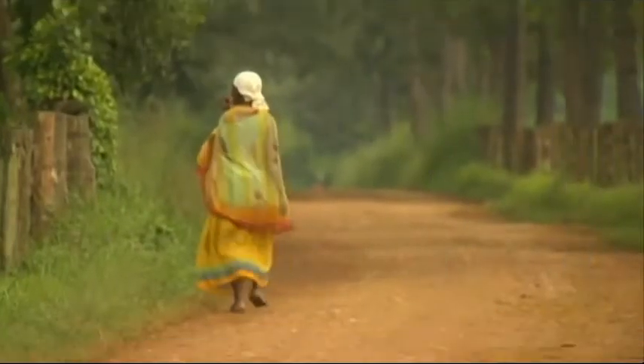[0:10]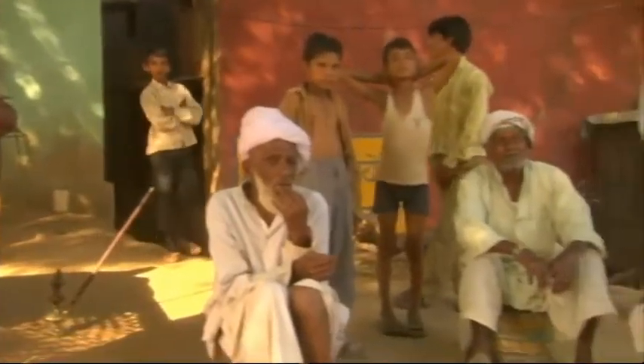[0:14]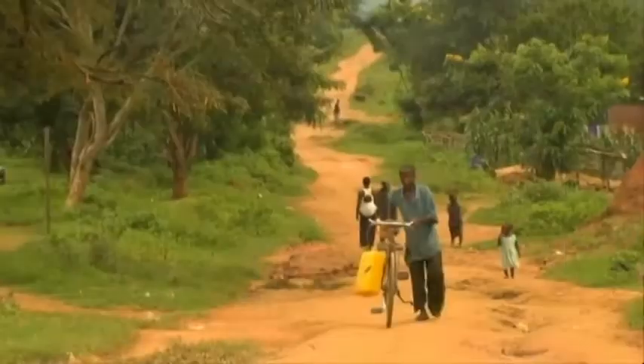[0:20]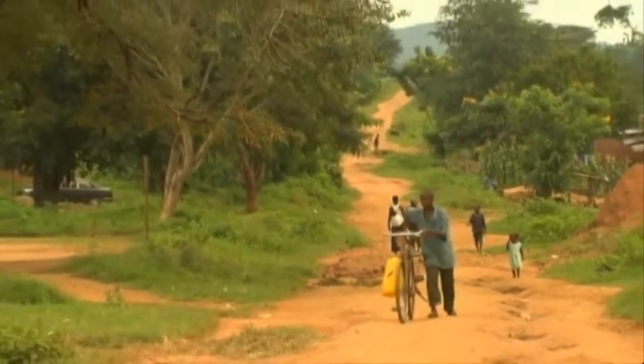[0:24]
Point-of-care diagnostics have become an important part in the screening and treatment of infectious diseases. Every year, over 10 million people die from infectious diseases worldwide. 95% of these deaths occur in developing countries where resources are limited. Therefore, there is a great need for a low resource-consuming and quick diagnostic device.
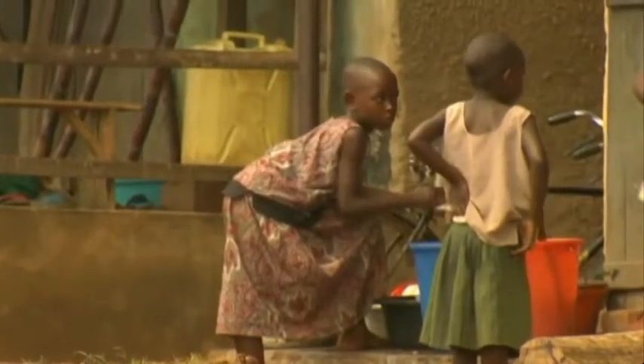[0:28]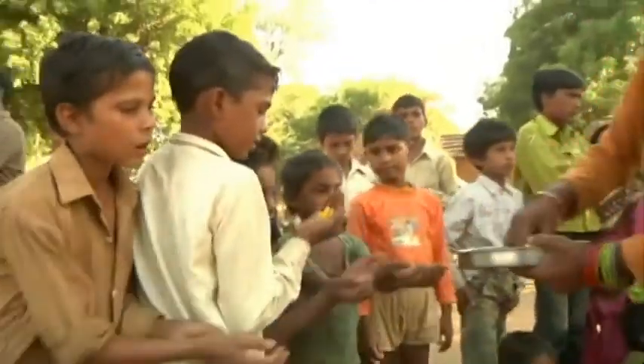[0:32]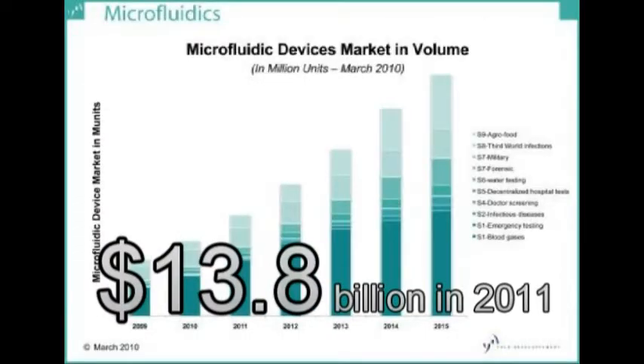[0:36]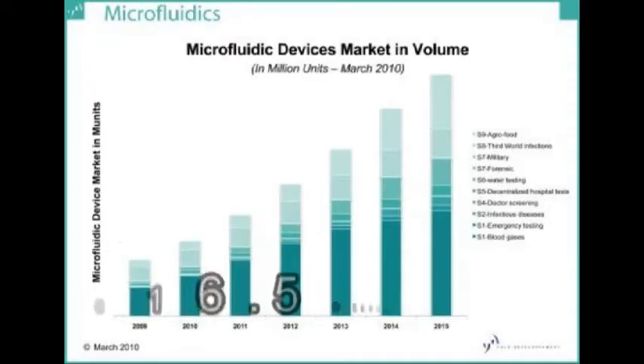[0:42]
Faster diagnostics would allow for earlier treatment and thus save lives. In addition, faster diagnostics would lower the overall healthcare cost by reducing the number of hospital visits necessary. Overall market value of point-of-care diagnostic devices was $13.8 billion in 2011 and is expected to increase to $16.5 billion in 2016. Detection of infectious diseases can be accomplished through PCR-based diagnostic devices. Such devices extract DNA from a sample and amplify it so that it can be detected.
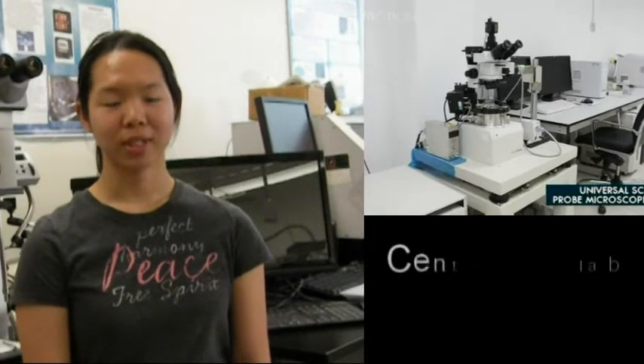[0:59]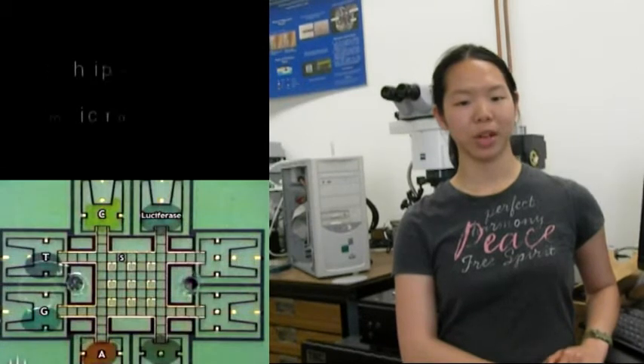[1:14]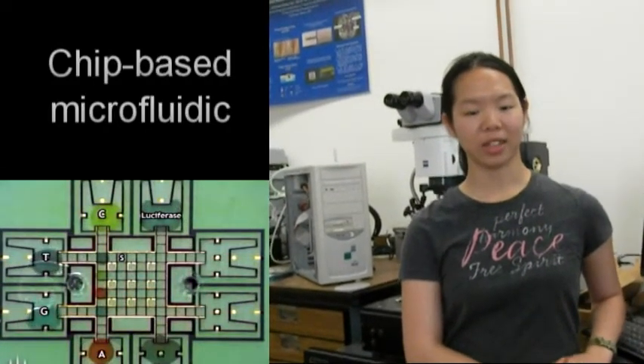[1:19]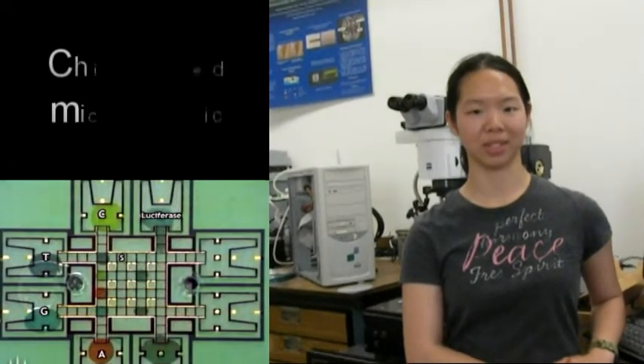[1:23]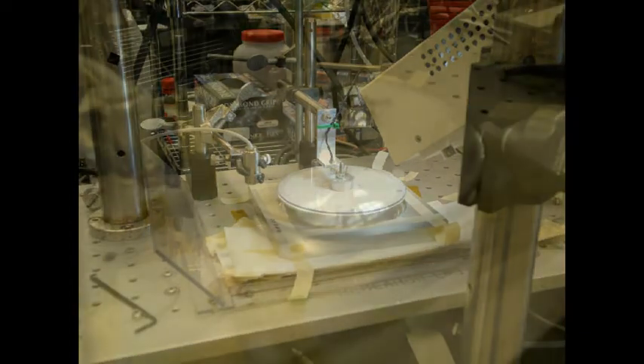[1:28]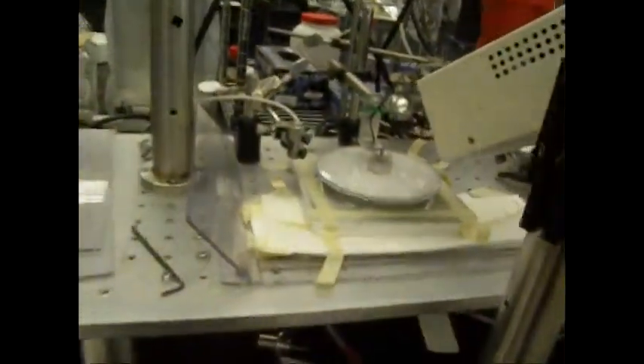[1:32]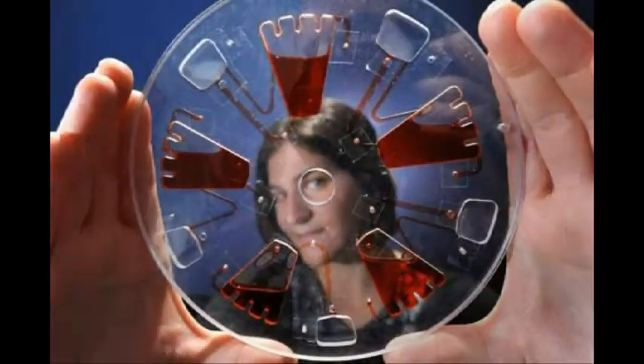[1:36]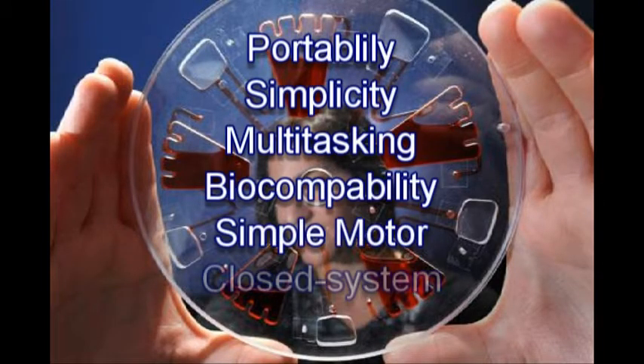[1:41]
There has been great progress in the field of CD microfluidics. CD microfluidics is composed of a disc, which a centrifugal force drives fluid outward from the center. Traits of CD microfluidics include portability, simplicity, multitasking, compatibility with a variety of biological samples, and the fact that it's run by a simple motor. Lastly, CD microfluidics is a closed system, meaning that all the processes occur in a disc without the need of external sources. A CD microfluidic device consists of fluid chambers connected by fluidic channels.
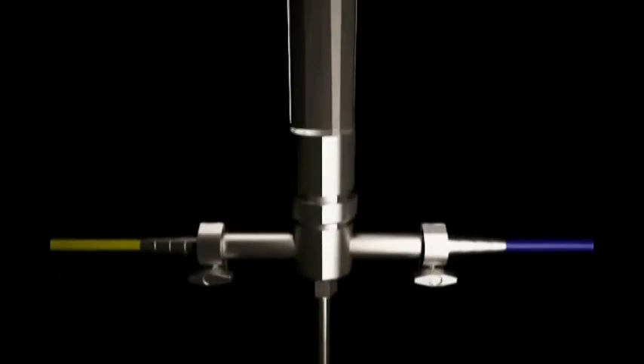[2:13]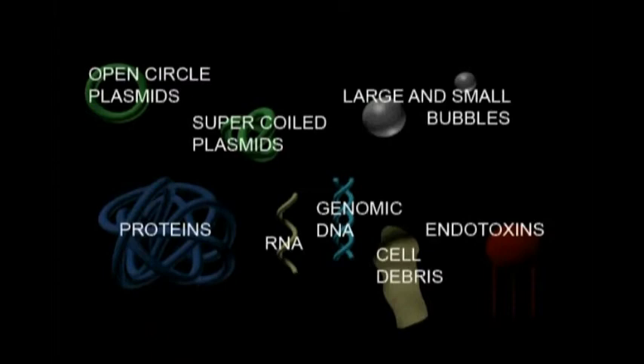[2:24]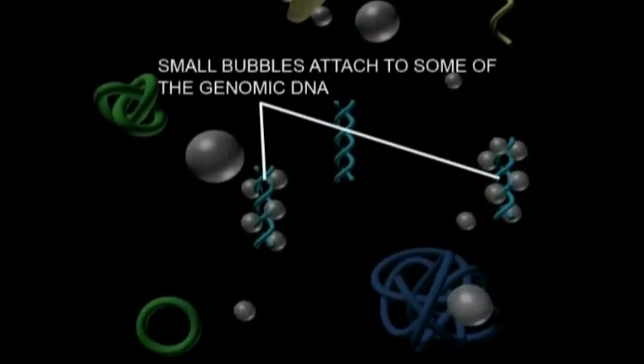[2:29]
A complete point-of-care sample-to-answer CD microfluidic device can perform several main steps, including cell lysis and separation, PCR, hybridization, and detection. Each step is performed in a separate chamber. The first step is cell lysis. Cell lysis involves breaking apart a cell wall to extract the genomic or proteomic material from the cell. Cell lysis can be performed using biological or chemical agents such as chemical buffers, or can be performed by applying mechanical force such as shear stress to a cell wall. This is achieved by using glass beads or magnetic beads.
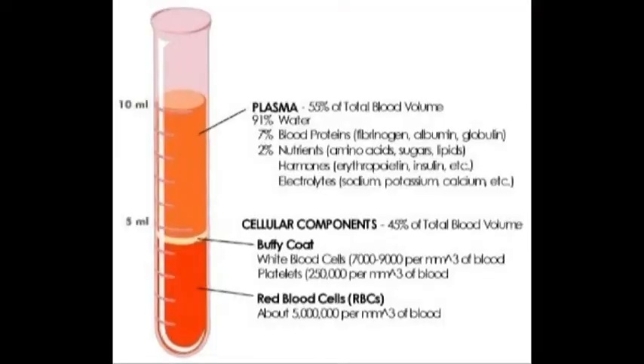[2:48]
The next step involves the separation of DNA from the other components of the cell. DNA is separated from the other components of the cell by spinning the CD. Since DNA is lighter than the other components of the cell, it floats to the top of the chamber, where a connecting channel guides the DNA supernatant into the PCR chamber. At this stage, a buffer solution is mixed with DNA to perform PCR. The buffer solution consists of primers, free nucleotides, and Taq polymerase.
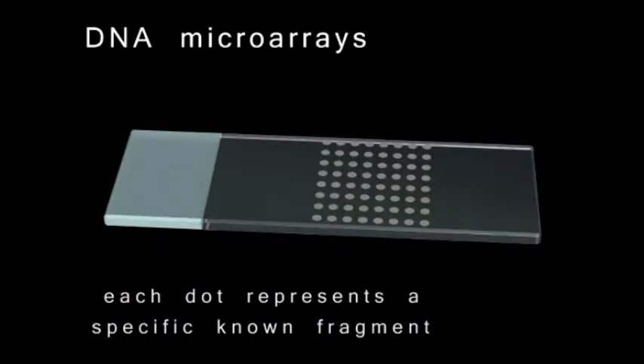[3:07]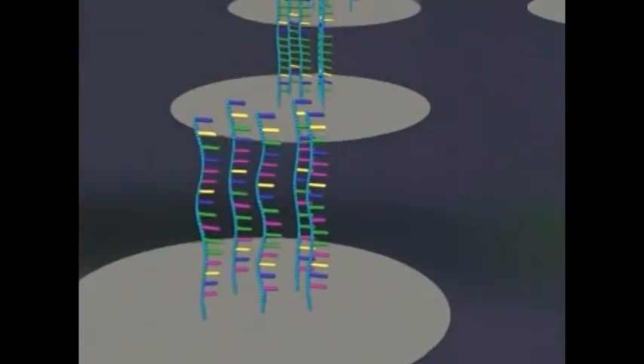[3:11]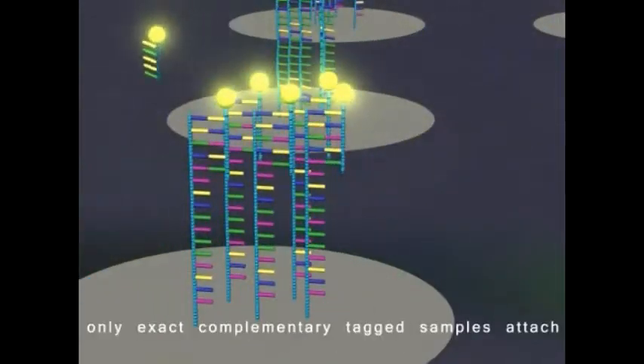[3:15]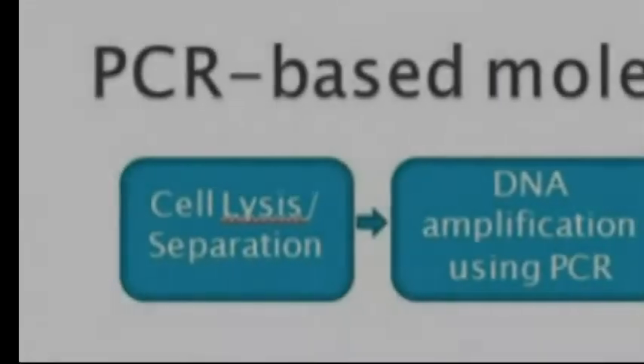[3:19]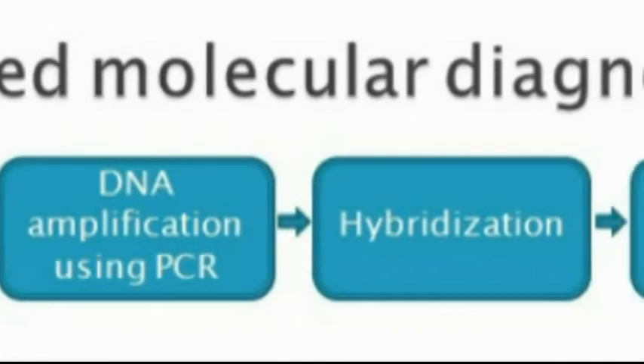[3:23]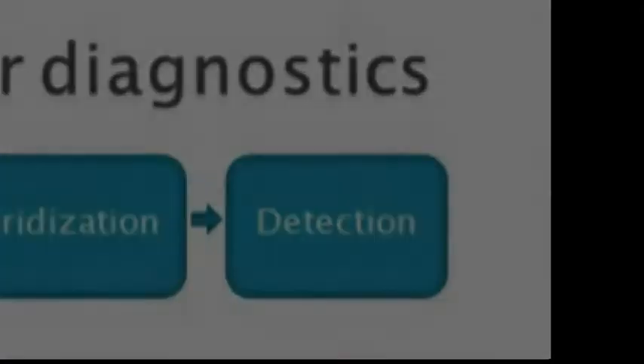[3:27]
After amplification, the DNA is sent to a hybridization chamber over a microarray where target probes attach to complementary DNA strands. The final step is where fluorescence detection can occur. A wash step is needed to remove any non-specifically adhered DNA. Additional chambers would be needed to hold reagents, buffer solutions, and waste from the PCR process.
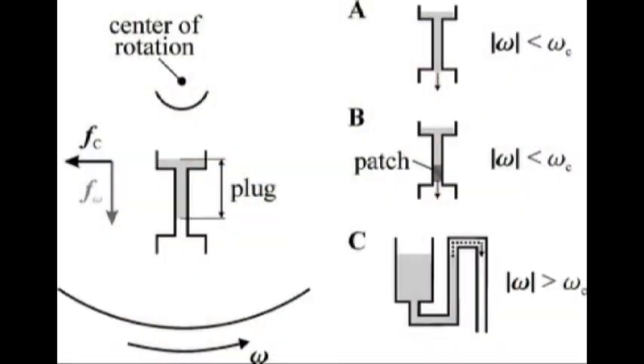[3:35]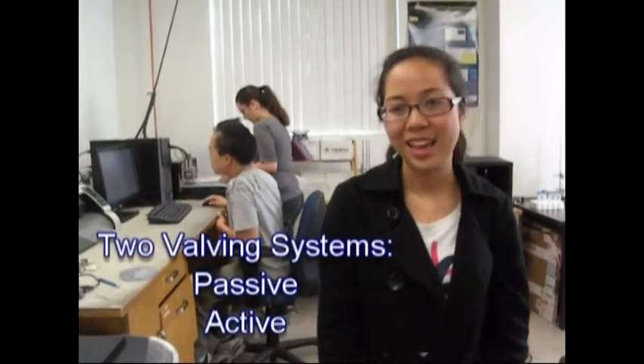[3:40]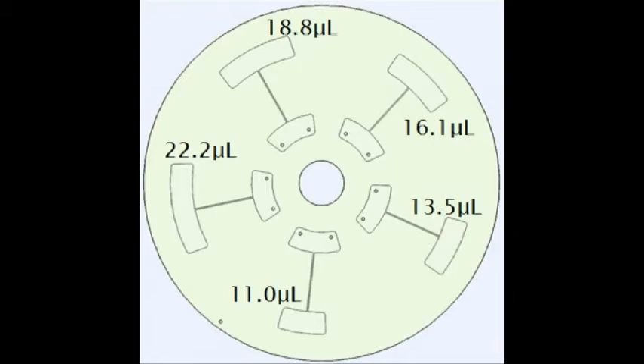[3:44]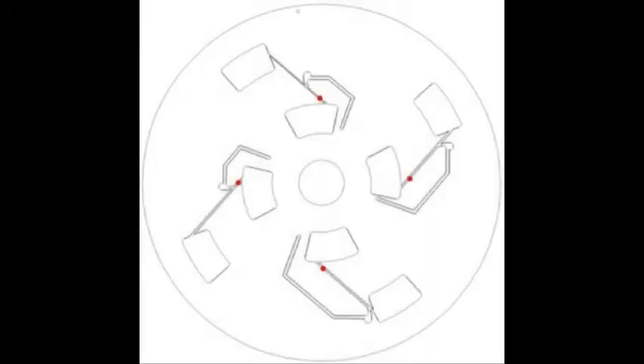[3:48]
Valving technique is the most important function utilized on the microfluidic CD platform. Valving is necessary to control fluid flowing from one chamber to another. There are two valving systems, passive and active. Passive valving does not require any external mechanism for fluid to flow from an inner to an outer chamber, while an active valving requires external mechanism to accomplish this.
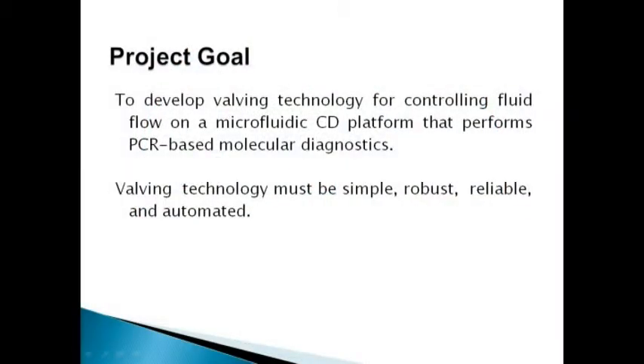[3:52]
Our goal is to develop valving technology for controlling fluid flow on a microfluidic CD platform. Ultimately, the microfluidic CD platform should be able to perform PCR-based molecular diagnostics. Valving technology must be simple, robust, reliable, and automated.
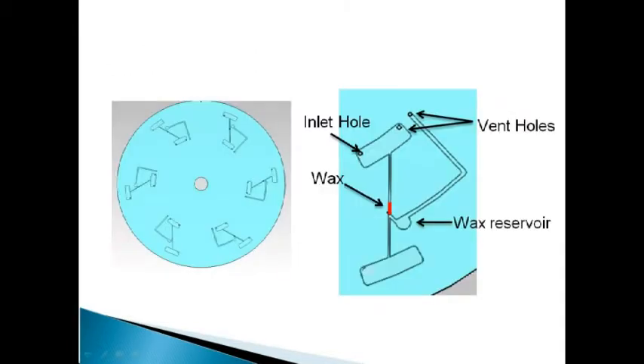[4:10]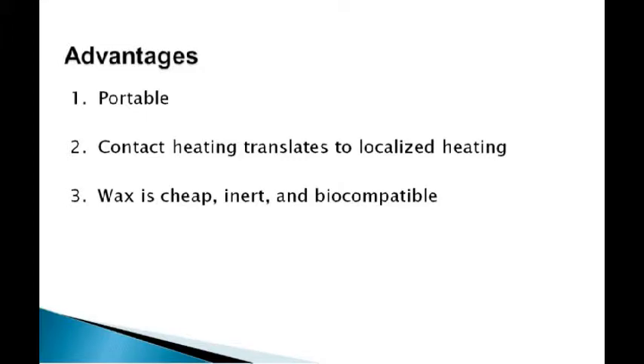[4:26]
Pictured here, we have SolidWorks drawings for our active valve wax design. Wax is colored red. Once the wax melts, it's designed to flow into the wax reservoir. The vent holes allow the fluid sample to be injected in and also to allow the wax to flow into the wax reservoir. Advantages of our design include portability, contact and localized heating, inexpensive, inert, and biocompatible wax.
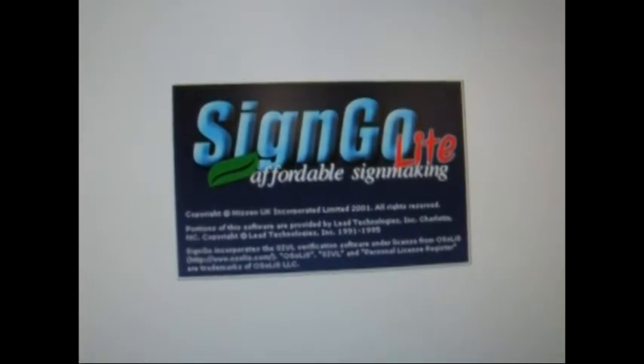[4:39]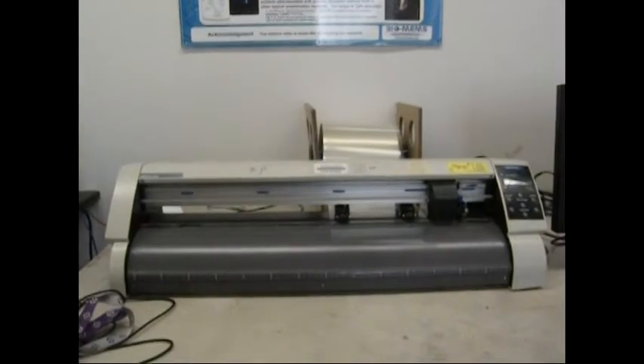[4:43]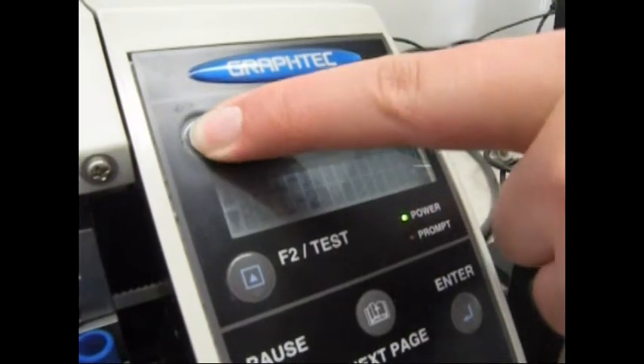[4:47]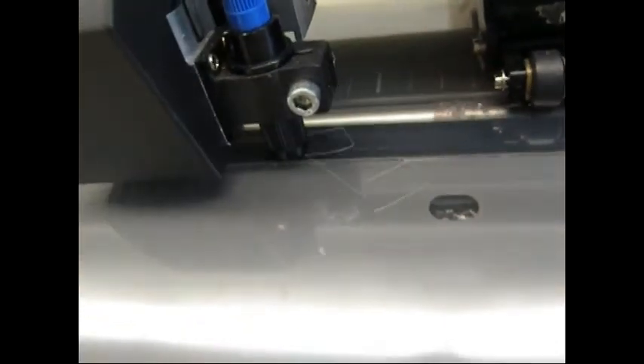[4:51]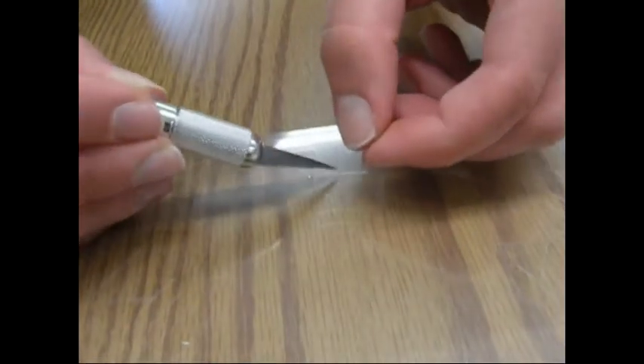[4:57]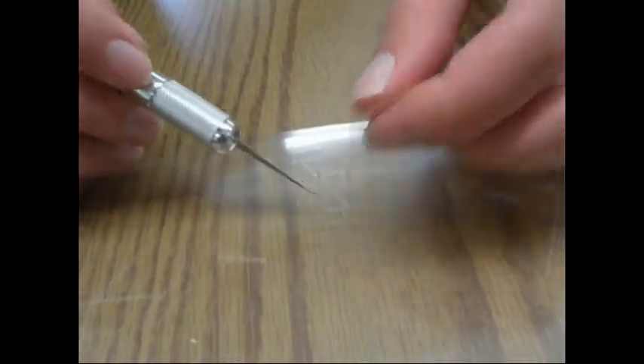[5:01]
We begin the fabrication of our CD by cutting the adhesive. To cut the adhesive, we import our CAD designs onto SignGo Lite. We turn on the cutter plotter, lift the lever, center the origin, and begin cutting our design. After our design is cut, we use an X-Acto knife to remove two layers of adhesive from the center of the CD and the chambers and channels. We make sure that we carefully cut these layers.
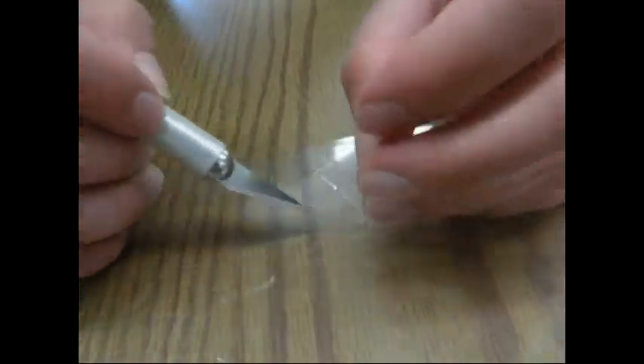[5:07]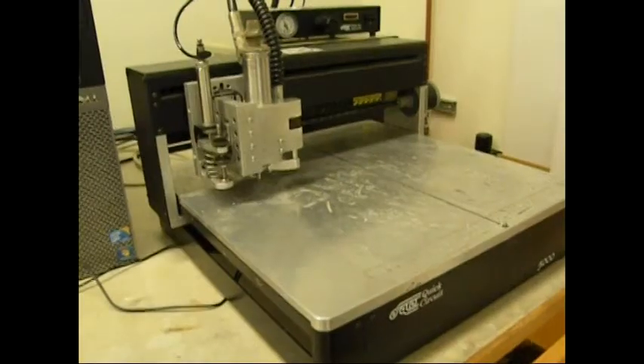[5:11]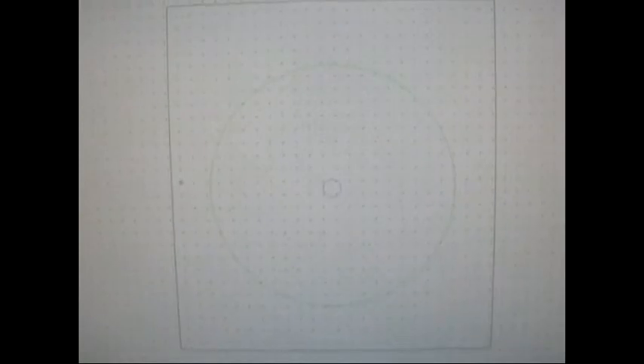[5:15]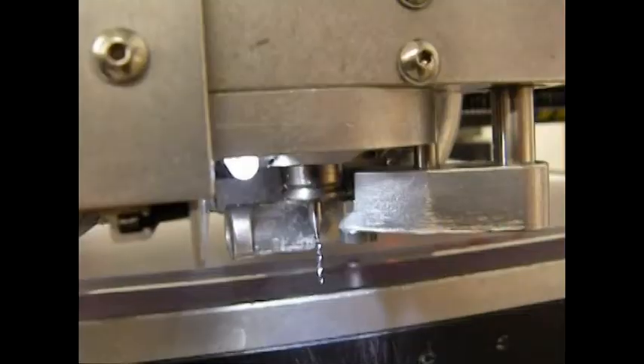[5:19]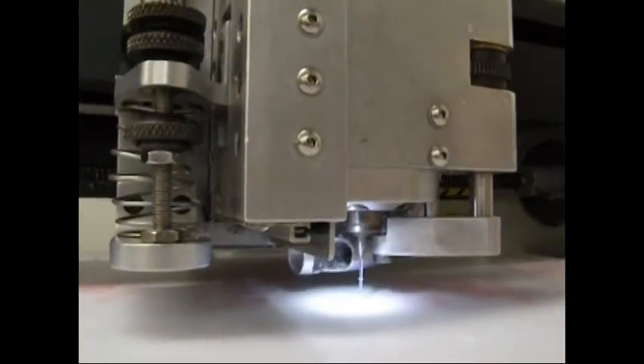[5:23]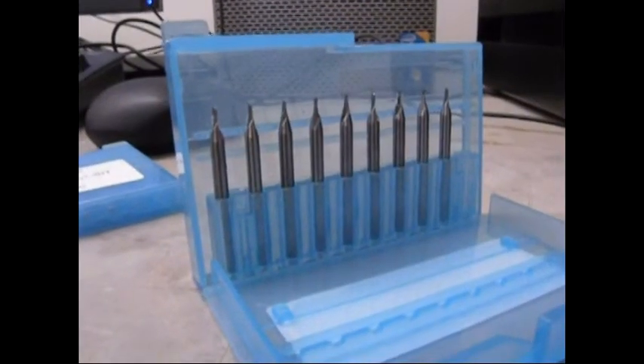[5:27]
Next, we mill our polycarbonate layer. We will use the milling machine, and we will import our design onto IsoProbe. To cut the vent holes and the alignment hole, we will use the drill bit. After the drill bit is loaded, the machine mills the holes. Next, we load end mills into the machine. The end mills cut the center of the CD and the perimeter of the CD.
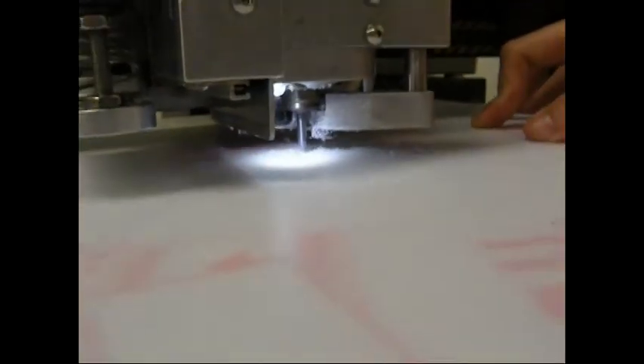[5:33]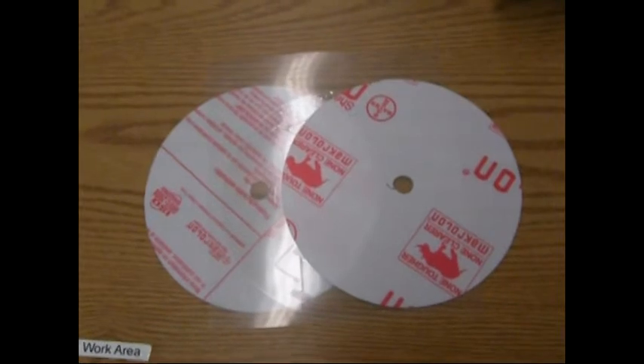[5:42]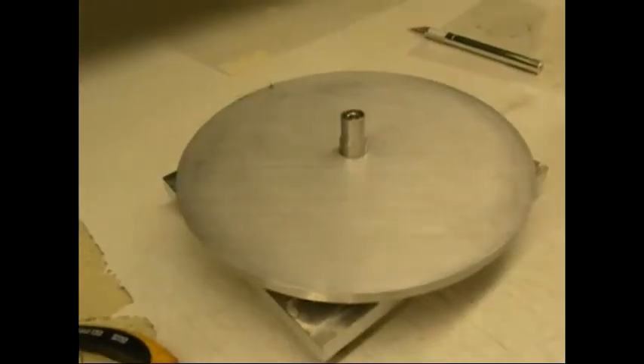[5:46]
Once we have our top and bottom polycarbonate layers, we begin deburring polycarbonate. We now have two polycarbonate layers and an adhesive layer. Our next step is to put together our CD. We will use an alignment stand to align the polycarbonate with the adhesive layer. The following is the assembly process.
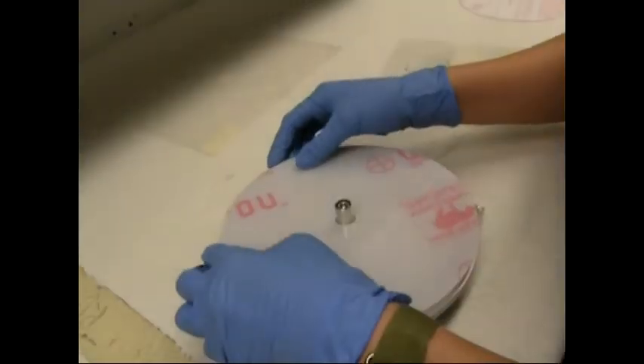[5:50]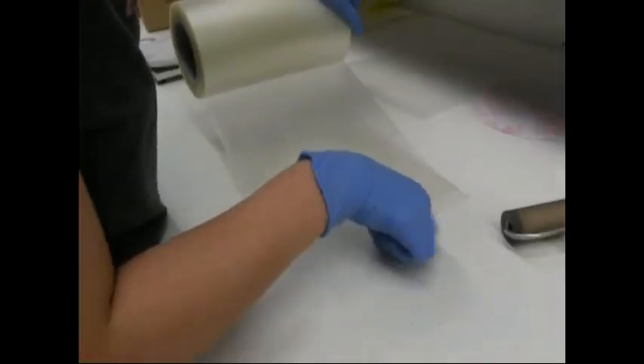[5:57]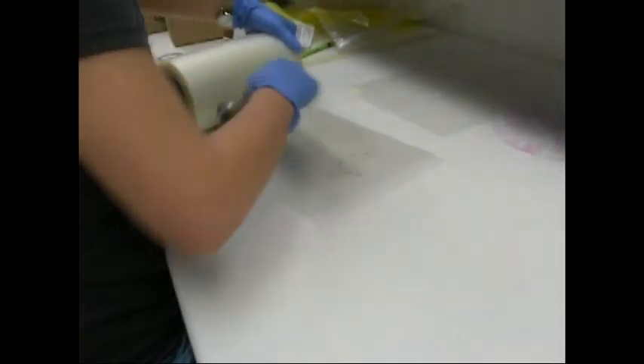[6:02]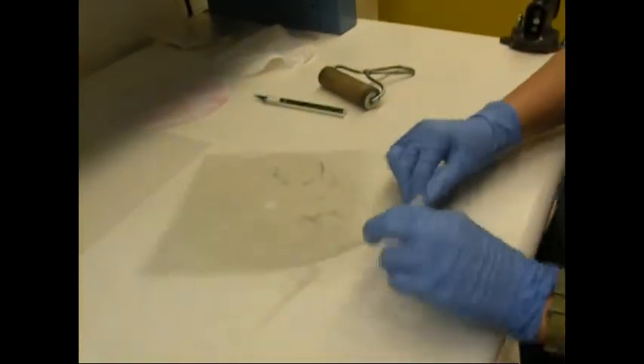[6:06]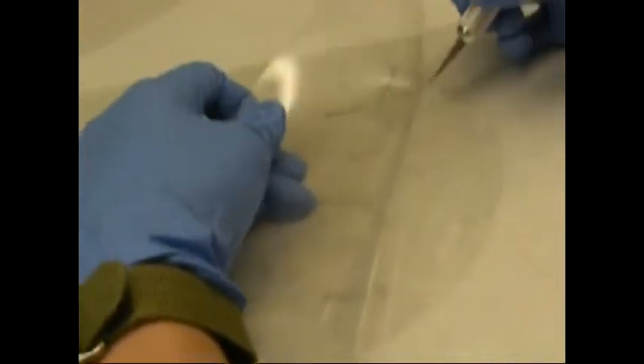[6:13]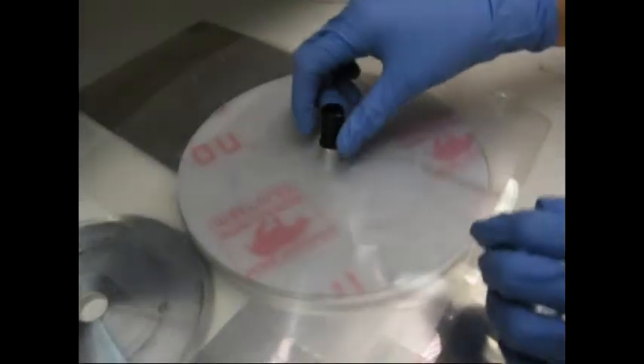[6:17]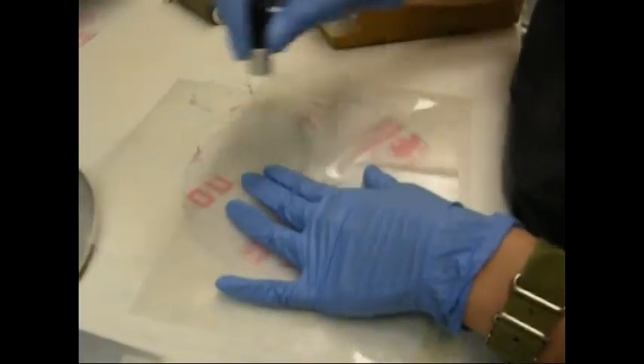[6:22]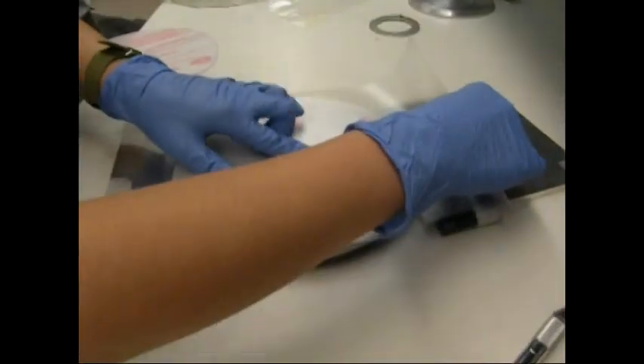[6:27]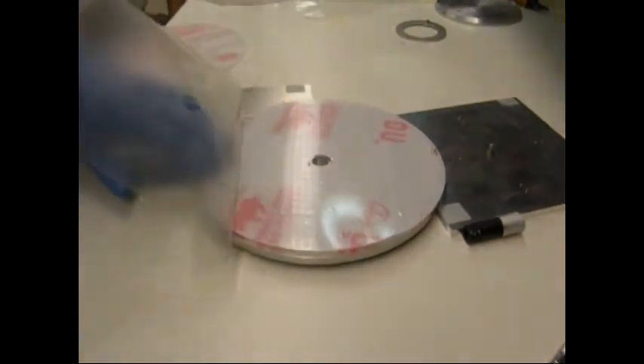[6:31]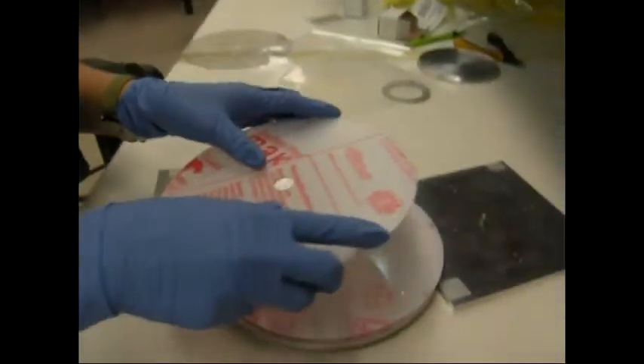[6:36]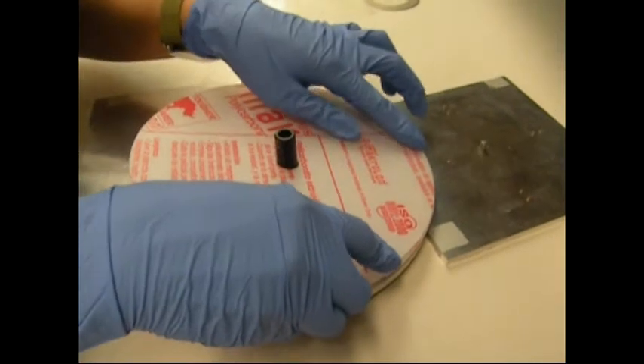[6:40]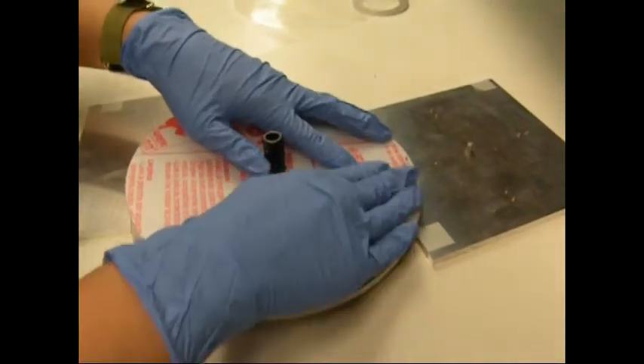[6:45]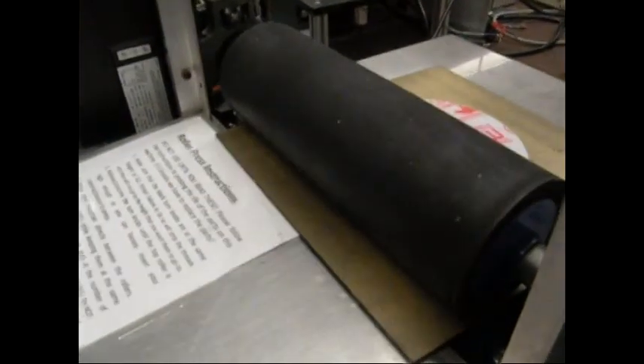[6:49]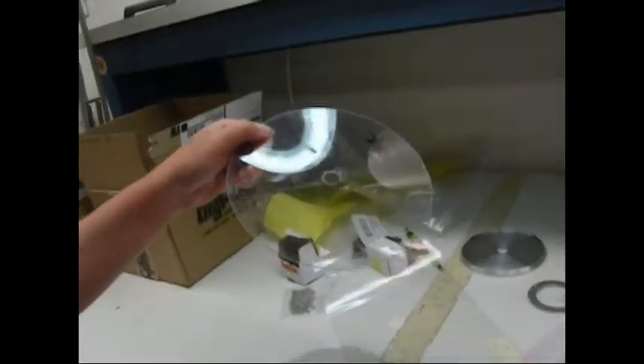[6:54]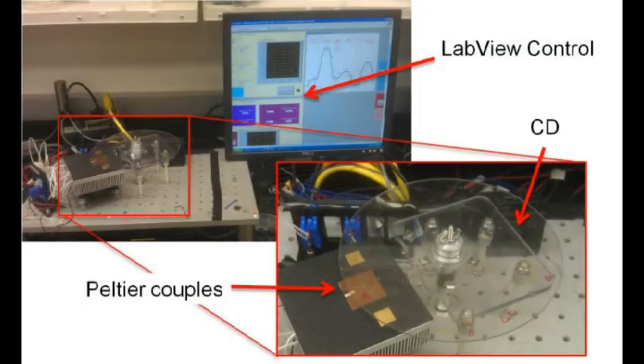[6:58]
To test the CD, we loaded the CD into the spin stand shown here. In order to spin the CD, we opened up LabVIEW and used a special PCR program. In order to melt the wax valves, the CD was first stopped, and then the Peltier couples were brought up into contact with the CD. After about 30 seconds and the wax melted, the Peltier couples were lowered and the CD was spun again in order to move the liquefied wax out of the way into the wax reservoir and to allow fluid to flow into the next chamber.
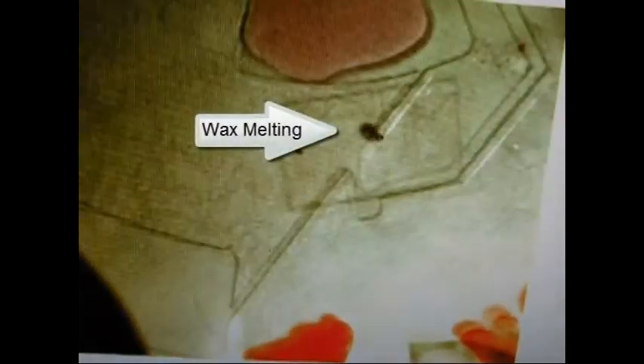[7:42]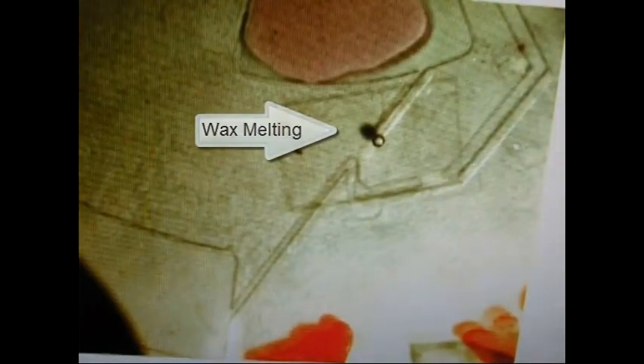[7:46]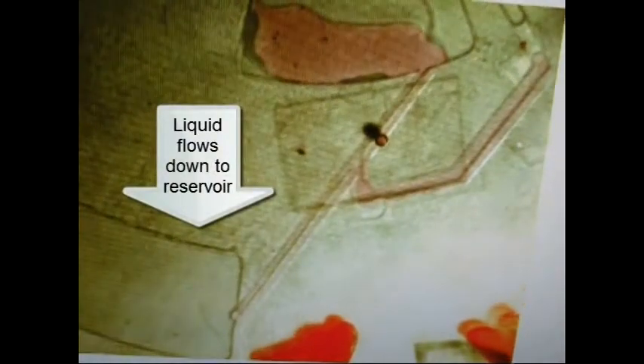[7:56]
This is a proof of concept of our wax chamber designs on a smaller CD. We were not able to film the results of the larger CD because the spin stand wasn't set up to film it. The CD is heated with a heat gun as it spun at 300 RPM. As you can see here, wax melts, flows into the designated wax channel. Some fluid also flows into the wax channel because the wax had not solidified completely. After the wax melts, the CD is spun at 4,000 RPM, and the fluid flows into the downstream chamber.
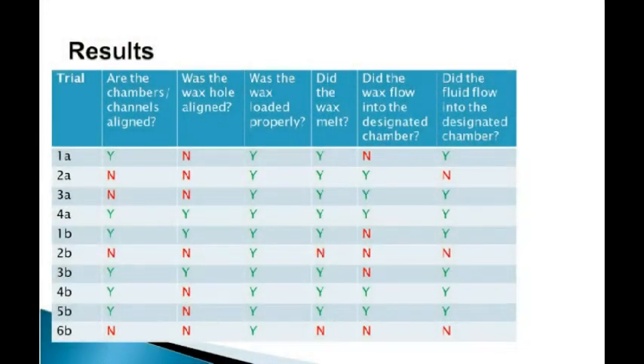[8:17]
Pictured here is our results table. In order to judge whether our tests were successful, we used a set of guiding questions. We answered these questions with a yes or no. From the results in the last two columns, we can tell that the wax did flow into the designated chamber, though it is not very reliable. In addition, fluid does flow into the next downstream chamber when the valve is opened.
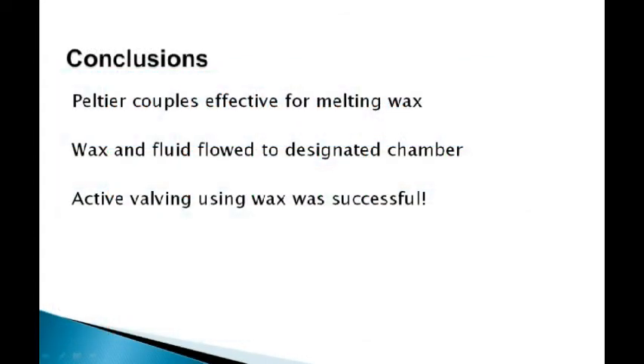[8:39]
So in conclusion, the Peltier couples were effective at melting wax. Wax and fluid flowed into their designated chambers. Overall, our active valving design using wax was successful.